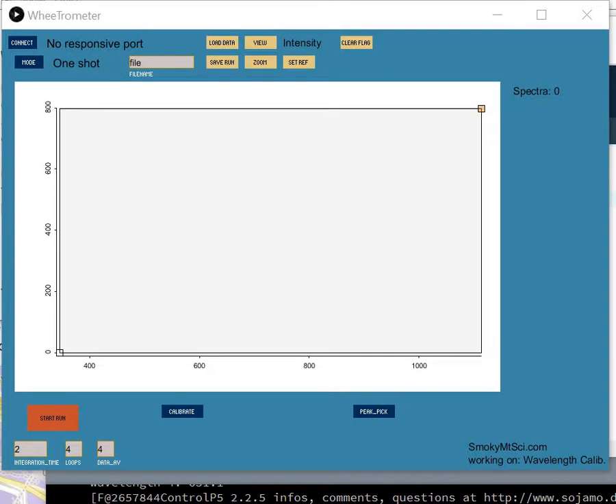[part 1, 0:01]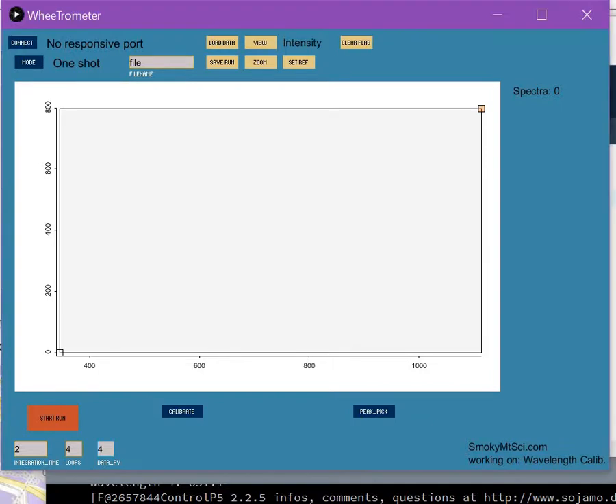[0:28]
In our software for our spectrometer, the WheeTrometer, I specifically want to talk about calibrating the wavelengths for the spectrometer. To do this we need to have a data set, and it needs to be collected with one data point averaging so that we get the full 3600 data points across the baseline.
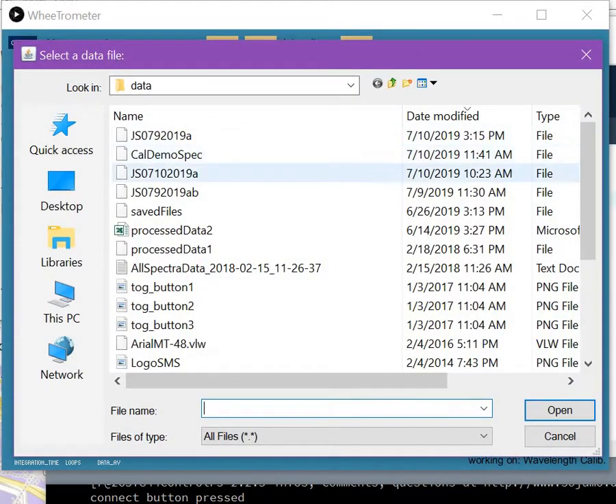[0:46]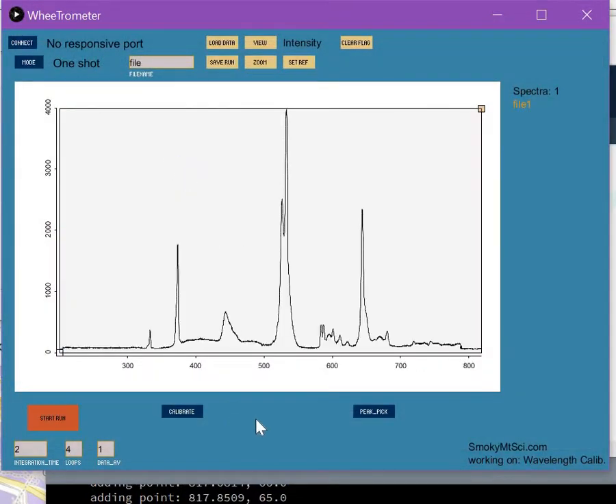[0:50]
We could record that, but I've done this beforehand, so let's load the calibration demo spectrum. So there's the calibration demo spectrum. This is the spectrum that you get when you record a compact fluorescent light emission. We're going to use this because the wavelengths are well known.
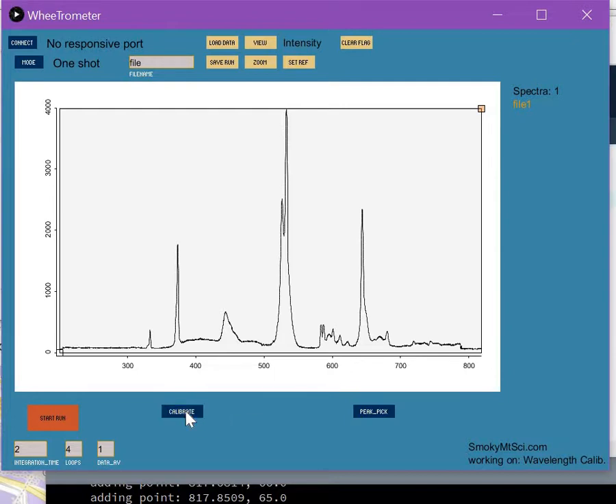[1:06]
We're going to hit the calibrate button down here, and it's going to give us a list of wavelengths and a list of pixels. So the first thing we have to do is make sure that we have all of our pixels. And these are the wavelengths for compact fluorescent light. If you want to use a different wavelength set, then you'll have to enter that information into a calibration file, and I'll talk about that at a different date.
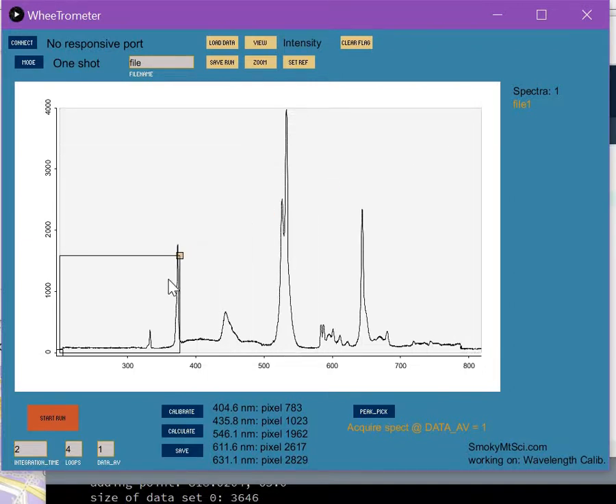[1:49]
All right, so what we have to do is make sure that the pixel number that goes with a peak is the correct pixel number. So we're going to zoom in on a peak, and let's take this medium-sized one there. Okay, this is the second peak. There's the first one there. Here's the second one. Second peak should be at 435.8, pixel number 1023.
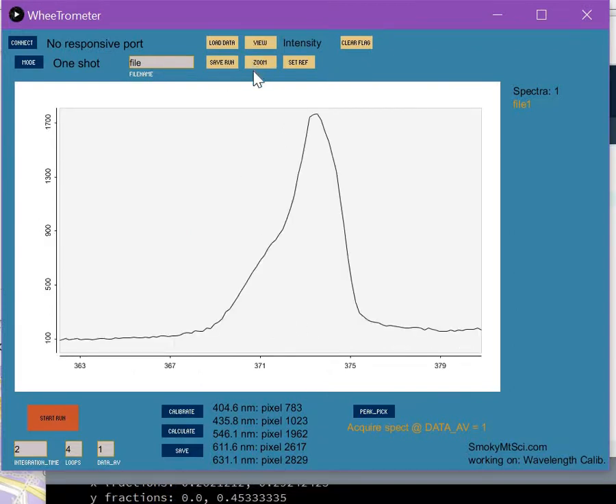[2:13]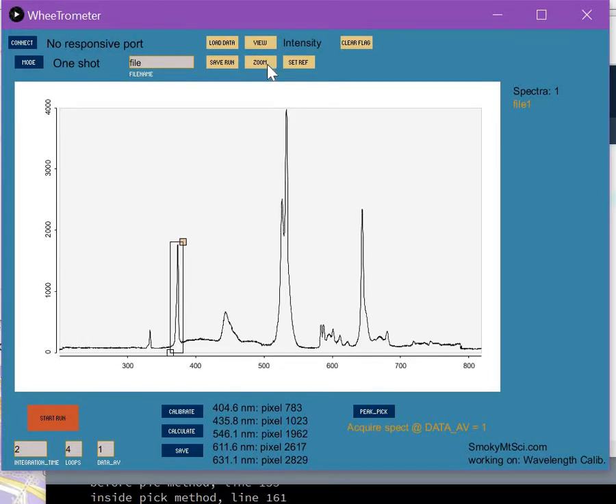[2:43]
Okay, so we're going to zoom in on that peak, and we're going to select that peak, and we're going to tell the program to find the pixel number. So you hit the pick button, and it picks the pixel number, the highest point in the zoomed region. All right, so I have done this previously for each of these peaks in this particular spectrum, so all of the peaks should be correct.
Okay, once we have all our pixels picked, I guess I should go through and show you which peaks go with which listing here. The first peak is this one. It's at 404.6. Second peak, as we said, 435.8. The third peak, we're going to skip this broad one. We're going to skip that one. We're going to take the highest peak in the spectrum. That should be at 546.1 nanometers. The next peak on the list is 611.6. That's this one. The final peak is down here, which is at 631.1 nanometers.
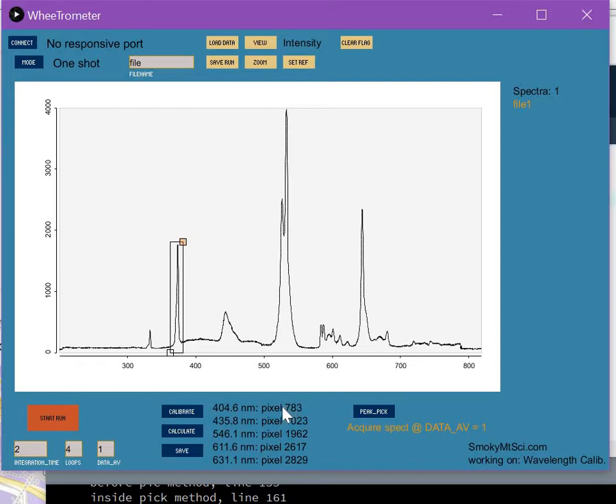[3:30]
All right, so we're going to select all of the peaks that we want to use in a least squares refinement. The model used here is a linear model with a sine function correction. All right, so we have all of our peaks selected. We're going to hit the calculate button, and what's going to happen is it's going to shift the baseline. The spectrum will stay the same, but the baseline will adjust so that the spectral maxima will align with the wavelengths that they're supposed to be at. So let's do that, hitting the calculate button.
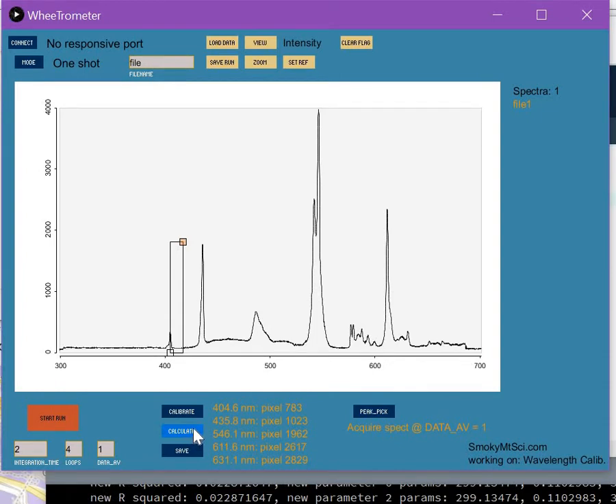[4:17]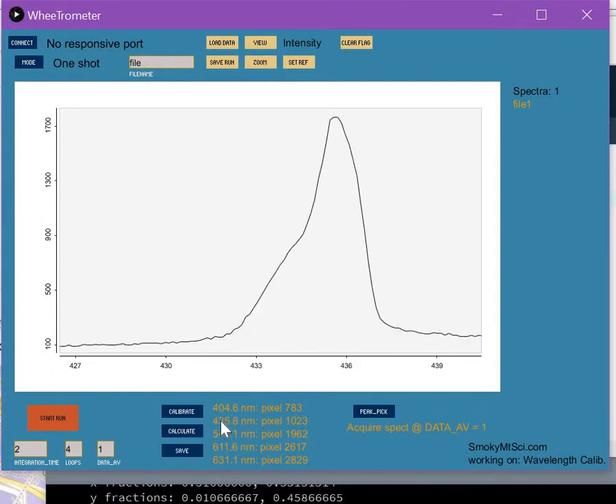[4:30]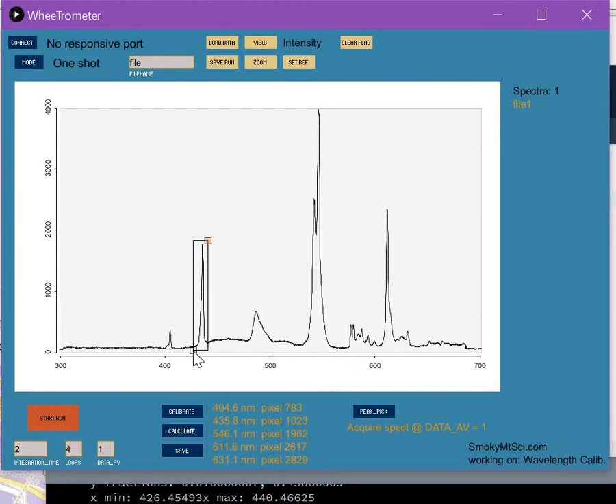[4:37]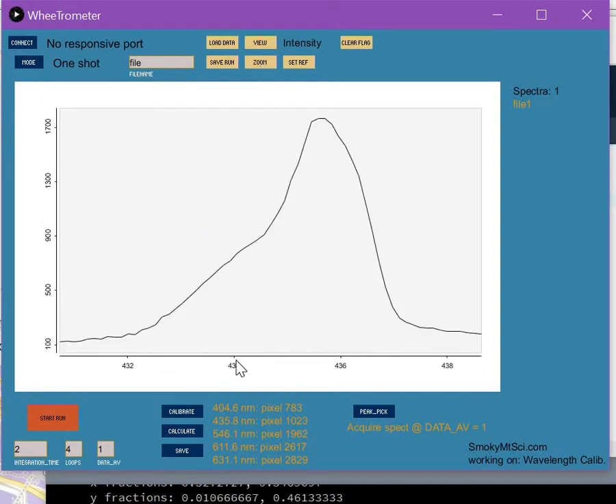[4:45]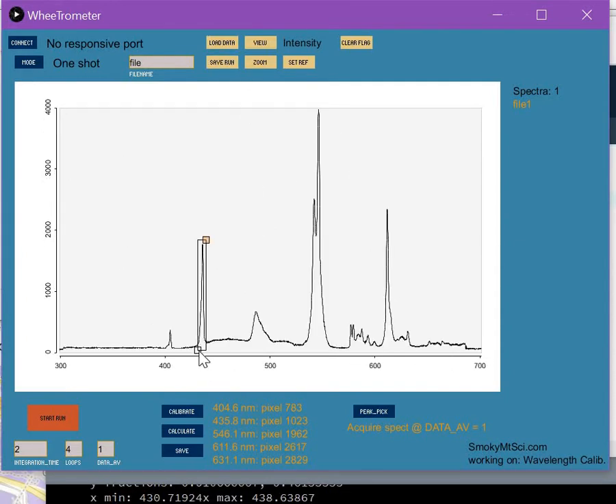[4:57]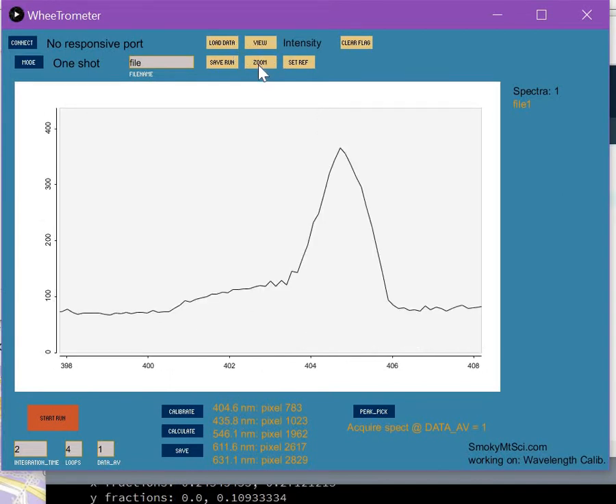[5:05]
Okay, we could look at any of the peaks that we wish to. We could look at the little guy down here, and it should show up at 404.6, and there's 405. That looks pretty good. Anyway, that is how we calibrate our wavelength data for the WheeTrometer.
And pretty soon here I'll have the save button working, so you'll be able to save the wavelength calibration file that you just created. I haven't quite gotten to that in writing code at this point, but that's going to be pretty soon here.
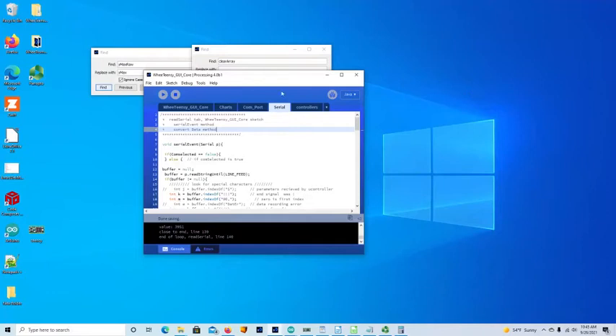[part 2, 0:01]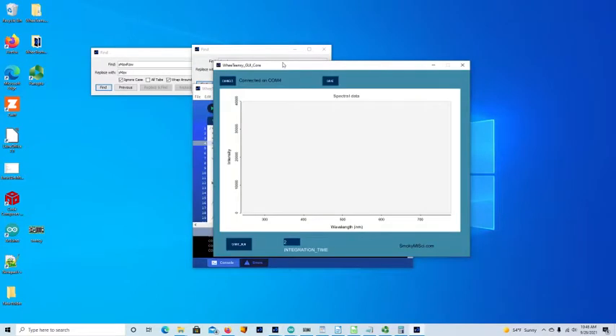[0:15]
Alright, so now we're going to do a little demo of the Teensy Core user interface. This is going to be a really minimal interface, so it's not going to have a lot of functionality. Anyway, when you open it up, it will try to connect to your spectrometer, and if it does, it'll say connected on, and it'll tell you the COM port number. All right, so we're all connected there.
Let's see what happens when we hit the start run button. And if things work right, like they should, you then get the spectrum, and this is the spectrum of a compact fluorescent lamp. Okay, you'll notice there's an integration time listed down here that says 2, and that is in milliseconds. And you can see that at 2 milliseconds, we're getting between 30 and 40,000 counts of intensity on the y-axis.
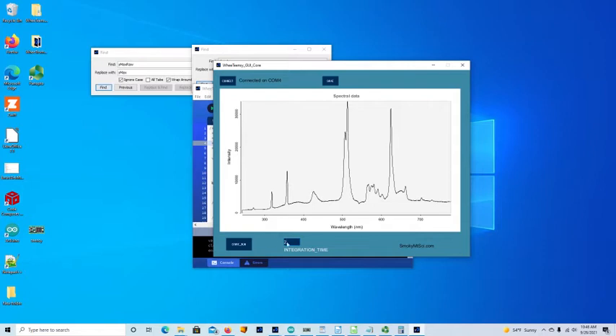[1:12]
Okay, let's see what happens when we turn this down. So let's say 1. You just click on that box there, you backspace and type in the 1, and then you come over and you start to run again. Okay, so we used to see 30,000. Now we're down to 13,000 at this point. Okay, so that means we have less intensity. Now you can't go up infinitely.
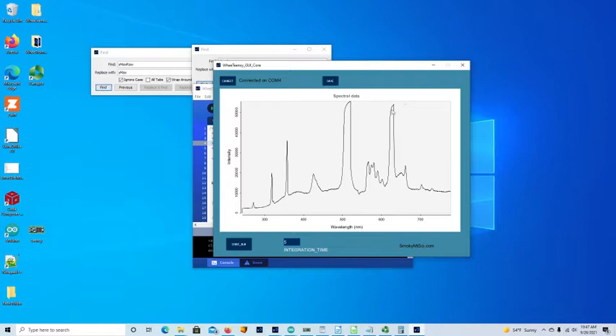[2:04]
Let's see what happens when we tell it we want 5 milliseconds of integration time. When we do that, we get a bigger number here, but you can see that we are maxing out our detector, which is a charge coupled device, right? So when you see flattened out peaks like this one and this one over here, that means you're not getting data. That data that you're recording is not particularly real, and that has implications for the width of the lines and other things as well. So it's best to get your really sharp data points or sharp lines and have a lower intensity number.
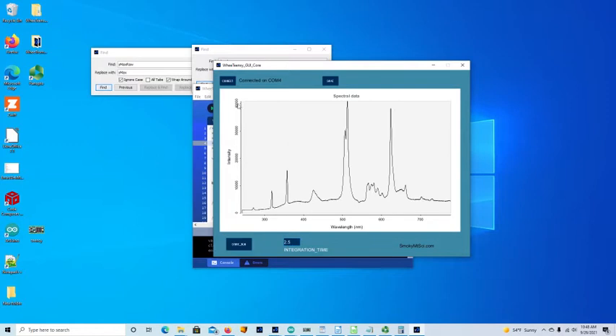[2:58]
So let's back that down, and I believe 2.5 is what we're looking for. I should also say that the maximum number that your A to D converter will give you is about 65,000. So at 50,000, yeah, we're probably maxing out the intensity. We're saturating our detector. All right, so at 2.5 milliseconds integration time, we have a little over 40,000 counts, and that looks pretty good.
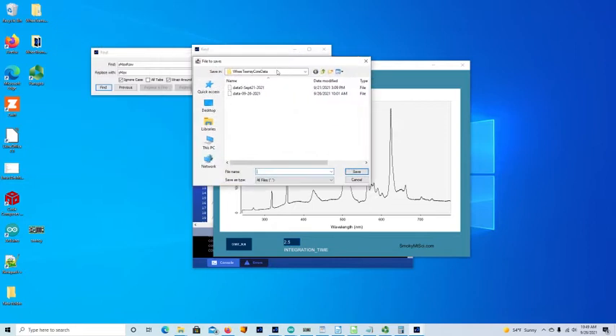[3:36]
All right, so we showed you the connect button. If we connect, nothing really appears to be happening, but it's actually checking to make sure you're still connected on that COM port. We've shown you the start button. We have demonstrated changing the integration time, and the only other button up here says save, and that allows you to save the data as a comma separated value file.
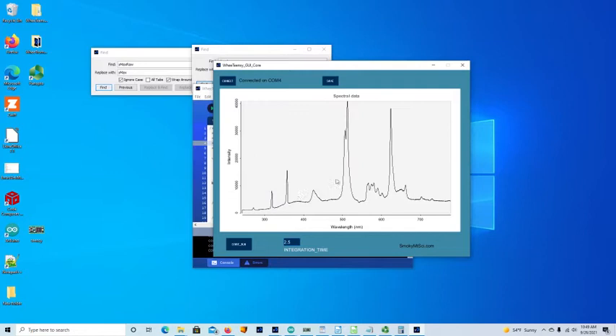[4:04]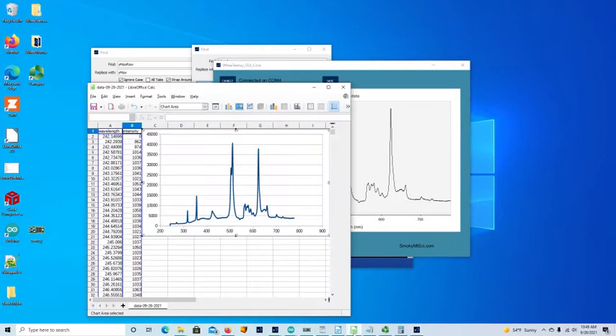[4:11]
All right, so you click on that button and it opens up a box, or a screen, or whatever you want to call this, that allows you to give it a name. Let's call this data 1, and we'll just hit the save, and let's make sure we know where we're at. So we are in Teensy Core data, and I believe that's on my desktop. Hit save.
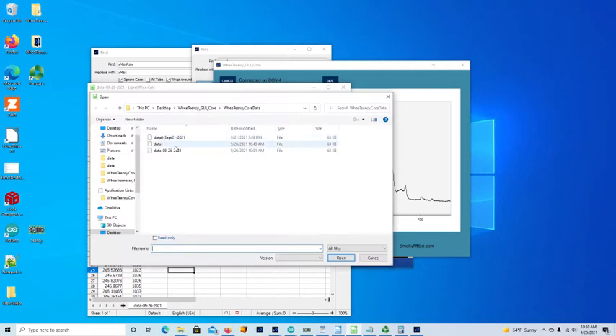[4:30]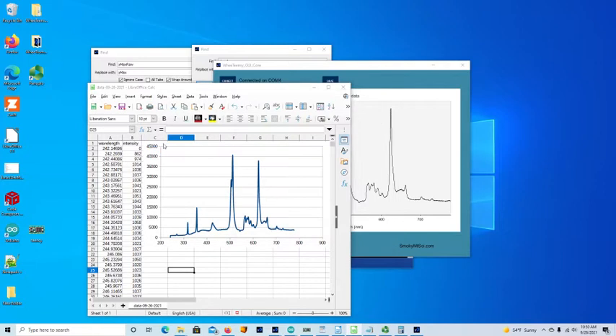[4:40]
All right, now we can open that using any kind of spreadsheet program that will open a CSV file. And I'm using LibreOffice, so let's go in here, and where is open? Open remote. Let's just see what happened. Okay, now we can open. All right, so here it is, desktop, Teensy GUI Core, Teensy GUI, Teensy Core data, and data 1 is where we were.
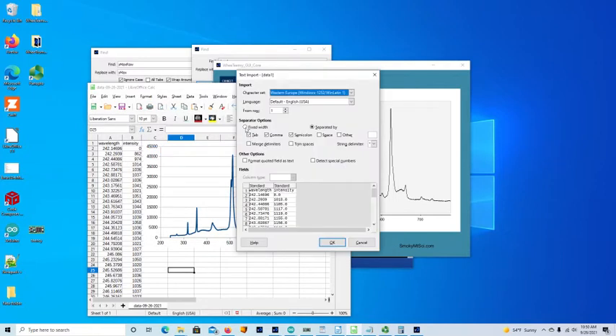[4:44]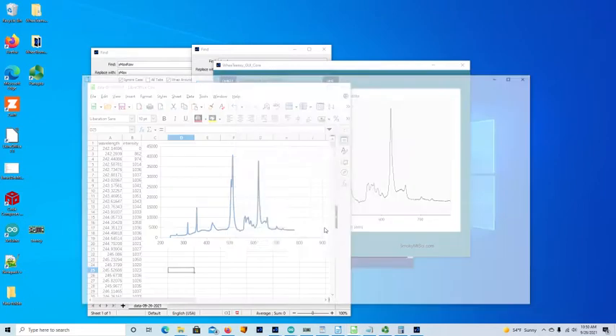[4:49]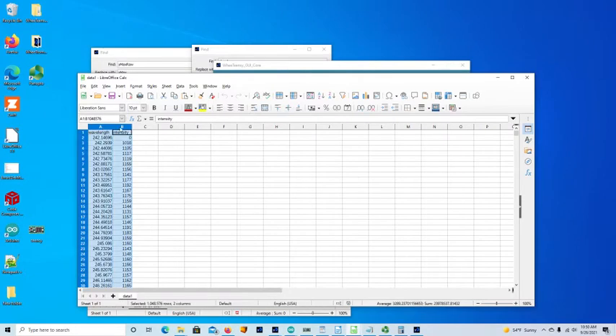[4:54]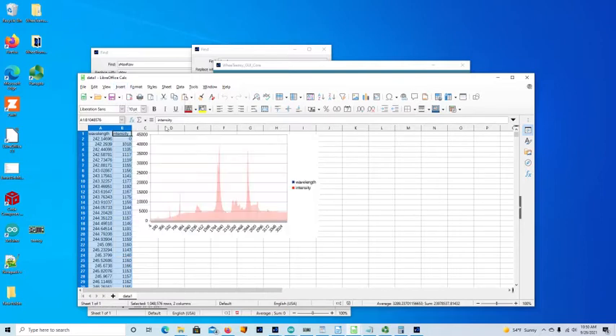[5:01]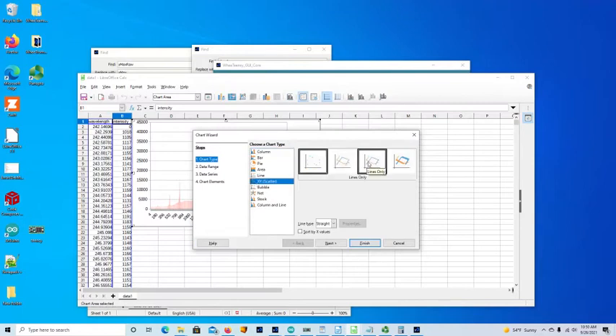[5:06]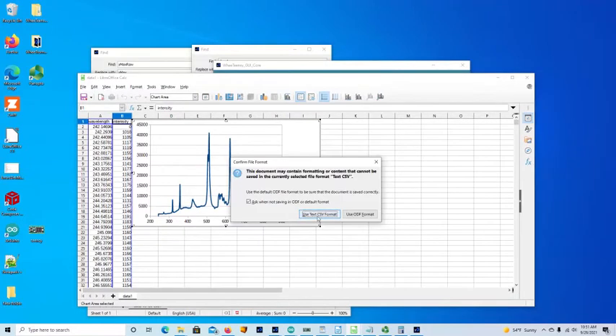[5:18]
Okay, we are opening with comma separated values, and now we can select our 2 columns and say insert chart, and hopefully we will be allowed to pick out the XY scatter and only the lines finished, and that's what the data look like. All right, so that is the view of the data.
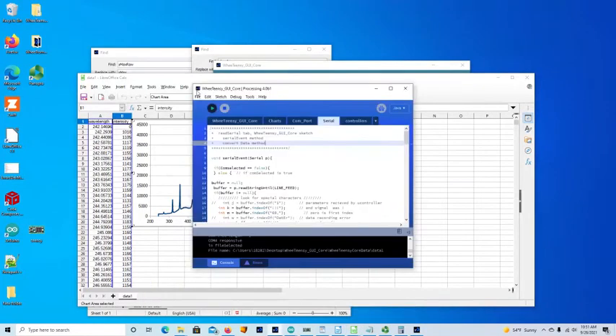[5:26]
Anyway, let's take a look at the code. All right, Teensy GUI code. The code has five tabs. The main tab is the Teensy GUI core tab, and all these programs have to be in the same folder. The folder is called Teensy GUI core, and this program was written in Processing. It's for Processing 4.0 B1.
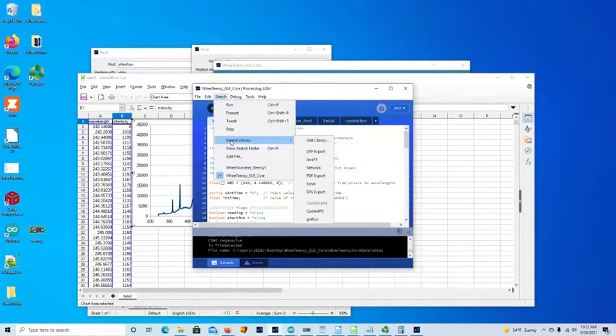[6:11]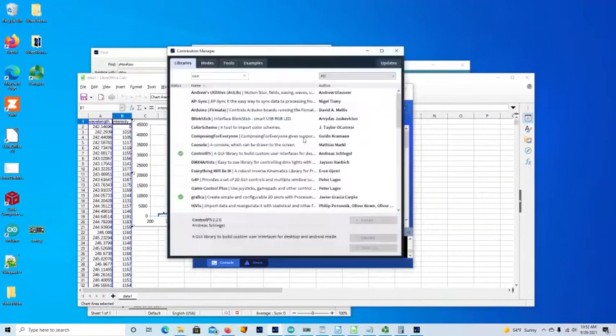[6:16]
And what do we want to tell you about that? Well, to start with, we have to have some imported files, and to import a file, you go into Sketch and Import Library, and if you don't have these libraries already, you go to Add Library, and you need the ControlP5 and the grafica library.
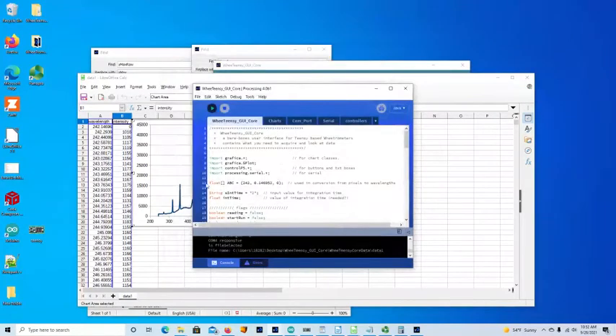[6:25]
Okay, so let's close that, and another thing you'll need to know is that this float ABC has three values, and these three values are used to convert pixel number to wavelength, right? So if you make your own spectrometer, you're going to have to come up with those ABC values, and I'll show you how to do that in another video.
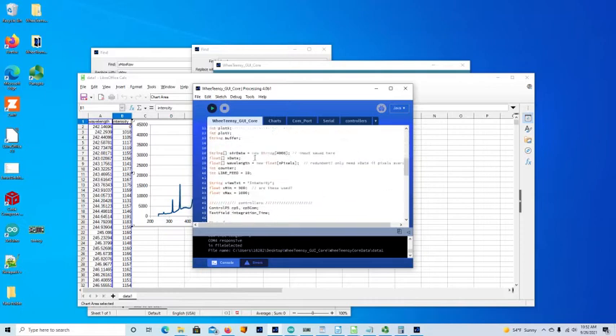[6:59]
Okay, so we have Teensy core. This has a lot of our variables declared. There's a setup that has the size of the user interface and the size of the plot and some other stuff in there. Then we have our draw method, and you'll see there's very little in either of these setup or draw methods. Instead, what you'll see is something like a setup charts method, and setup charts is going to be on the charts tab, right? There's a controller setup, and that'll be under the controllers tab. There's a setup COM port, and that's going to be in the COM port tab. Connect is in the COM port tab too.
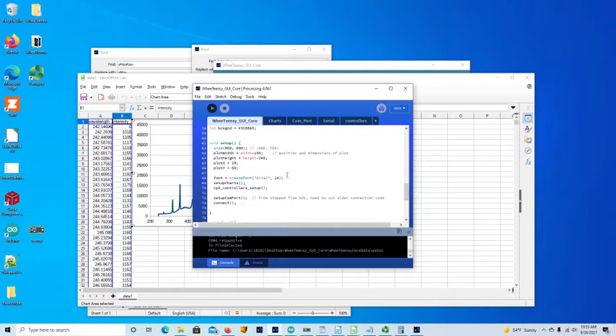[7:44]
All right. So if you don't know where one of these things is, I try to put a little comment at the top that says that this has the setup COM port method and the connect method, right? Charts has a number of methods: setup charts, wavelength calculation, set axis, plot charts, and etc. Right? So there's a lot of stuff in like the serial tab, and I probably should clean it up a little bit before I put it on GitHub. There's a bunch of stuff in the controllers tab.
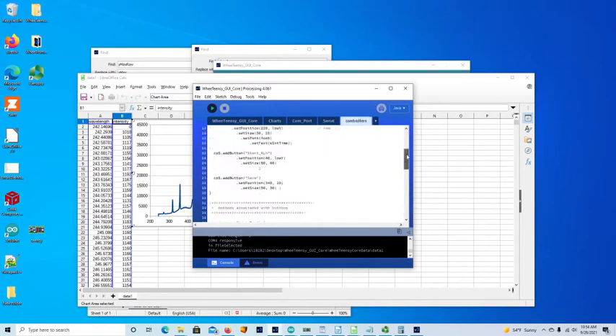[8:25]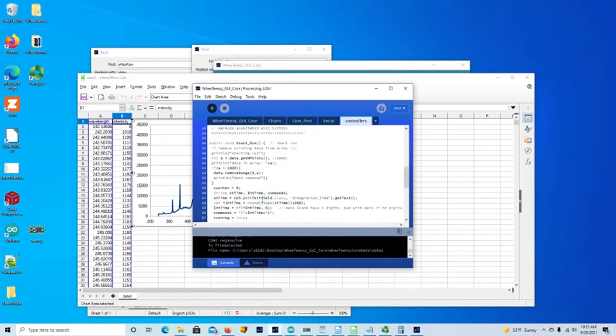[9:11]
All right, so let's go to the top there. It has the setup controllers method, and it sets up the buttons and the text box. There are methods that run when you click on a button. Those methods are down at the bottom, right? So if you click on the save button, it runs the save method, which just says select output, and this file to save. That's a method that is in Processing, and then this file selected method was defined down there. Okay. All right, the start run is up here, and like that.
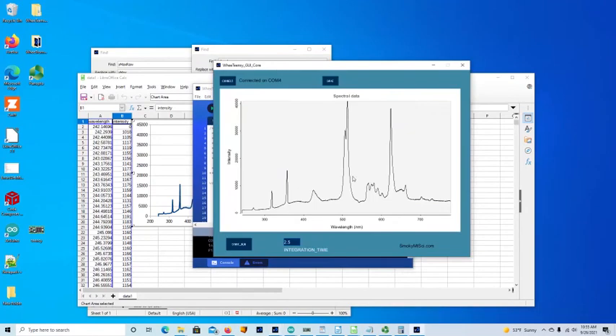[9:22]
Okay, so like I said, this is a fairly minimal user interface. All it does is give you the raw data back out, and it only allows one single spectrum to be collected. But we will have other user interface videos and other user interface code available, and we will have demos for that as well.
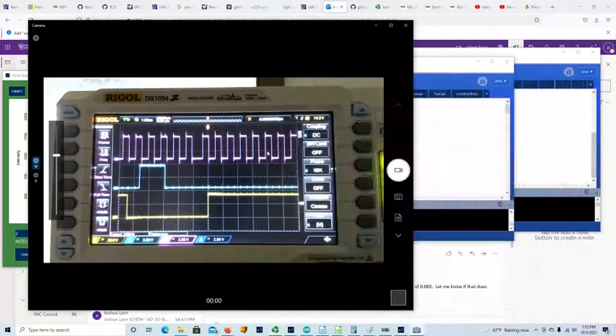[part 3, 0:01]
All right, this is a video showing the scope traces for the inputs to a TCD1304 charge coupled device, right? And what you see here, the yellow is the integration clear gate, and that's what we are triggering off of. The blue is the SH that determines the integration time. And the pink here, that's the clock, right?
So the first thing you should notice is that nothing is moving here. Nothing's moving side to side. There's little variations in the little blip heights here. That means that this is not a single shot, it's a continuous scope trace. All right, so let's see.
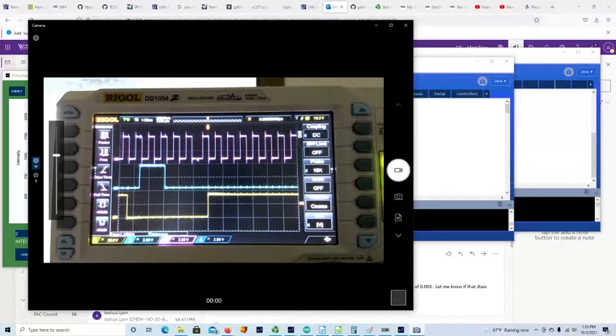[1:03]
The clock is running a little bit faster than 1 megahertz. As you can see, the divisions are at 1 microsecond. So if we start here, then 1 microsecond is there, and you can see we're inside of that. Okay. The other thing you need to have is this has to be high when the ICG pin goes high. Right? The ICG pin going high is what starts an acquisition.
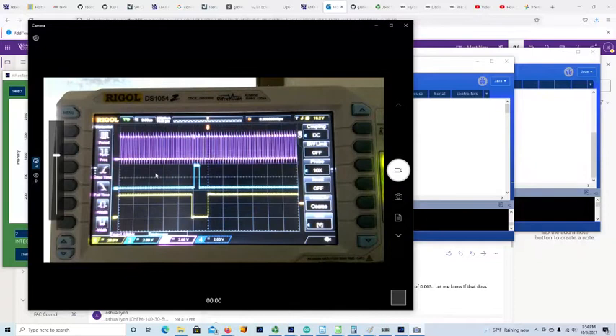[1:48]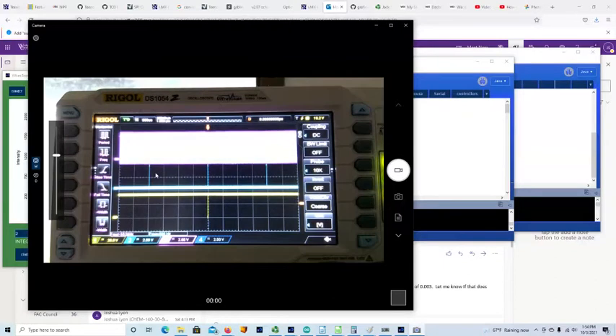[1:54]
All right, let's change the time scale and show you what happens with the ICG and the SH pins, right? SH pins, like I said, is the integration time. As you see, we're going to longer and longer times, and we've just completely lost the view of the clock. And here we have the ICG, the integration period, okay? And I believe that says 0.5 milliseconds, so 500 microseconds. So this is a half, 1, 1.5, 2. Okay, that's 2 milliseconds for the integration time.
You'll notice that the ICG period is not showing up here. We don't have a second ICG period. That should show up at about 14 milliseconds. So let's keep clicking this and see if we can get a look at it. All right, let's click it back once, and we'll move it on over some. I'm doing this wrong. I got my finger on the wrong thing. So now we should see the new ICG period come in, or pulse.
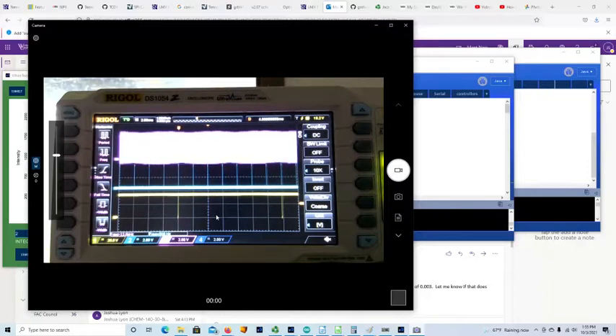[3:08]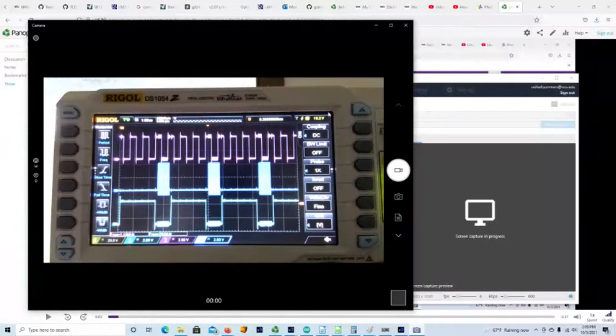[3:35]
All right, and what we see, we have 2 milliseconds between divisions. So it's 2, 4, 6, 8, 10, 12, just under 14 milliseconds, and that's how long it takes with this clock setting to acquire a full set of data on the TCD1304.
All right, so this video shows the timing of the ADC acquisition on the WheeTrometer. And what we have in the pink at the top here are the clock pulses for the charge coupled device, right? And these pulses come every little less than 1 microsecond. And every 4 pulses, we need to have an observation. We need to collect data on the ADC. And that's what's being shown in the lower traces.
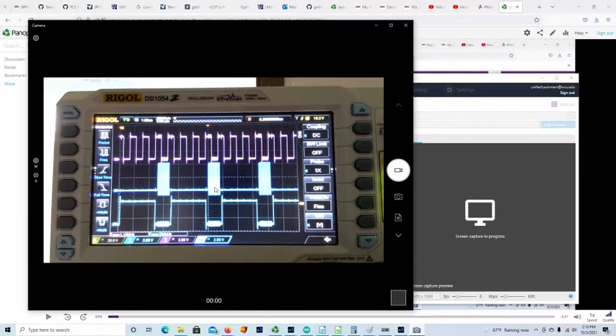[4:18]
This ADC is a 16-bit ADC, and it communicates with SPI. So what we need to do is take our chip select pin low. That's what's going on in the bottom trace, and we have to give it 16 clock pulses. So we have to have the reads be 4 CCD clocks apart, and you can see we're collecting here. That's 1, 2, 3, 4, and then again, we're collecting, and then 1, 2, 3, 4 over on that side, right? So all these lower events are happening 4 clock pulses apart on the CCD clocks.
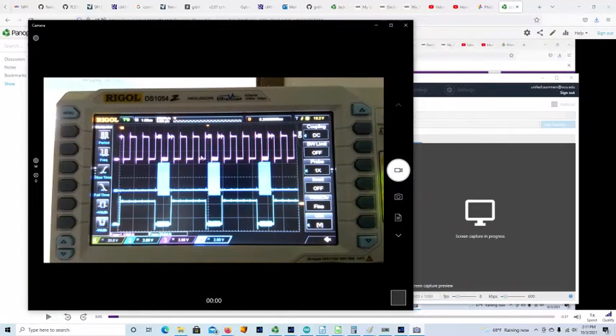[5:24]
And when we zoom in a little bit, we can get a good look at that. If you want to figure out what your timing is here, I should have figured that out, but I forgot to. Anyway, this is the time when the ADC is sampling, and during this period it's outputting 1, 2, 3, 4, up to 16 bits, right?
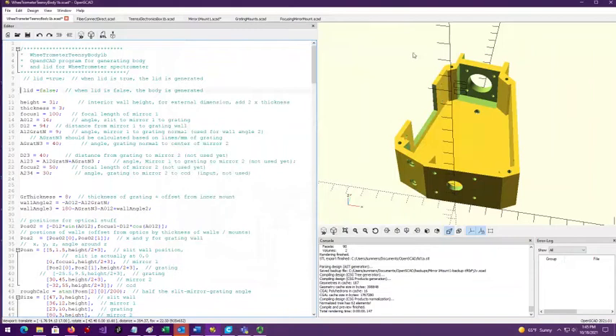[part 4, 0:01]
Today we're going to talk about the OpenSCAD program for generating 3D printable spectrometers. Okay, so over here we have a rendering, well, a view of the body of the spectrometer, right?
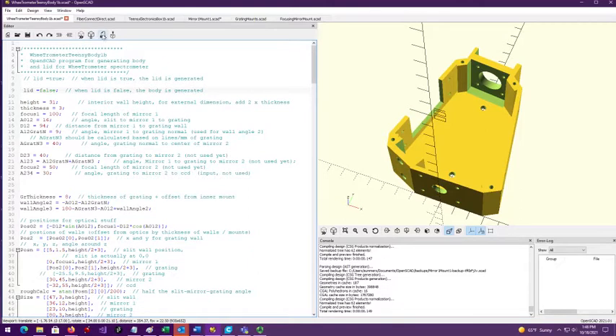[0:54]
So you go in and download the SCAD program for WheeTrometerTeensyBody1b.scad, and this is what you see, right? This button here regenerates the rendering. This button over here makes it a little more polished. This button downloads the STL file, and that one apparently is supposed to do some 3D printing, but we don't have it set up for that. All right, so in the WheeTrometerTeensyBody1b.scad folder, you'll see this, and this generates the figure.
All right, there's a bunch of information in here. This generates the figure based on geometry, and I'm working to get it to where you just enter the distances and angles and it generates the 3D model for you, but we're not quite there yet. Okay, so what we've got.
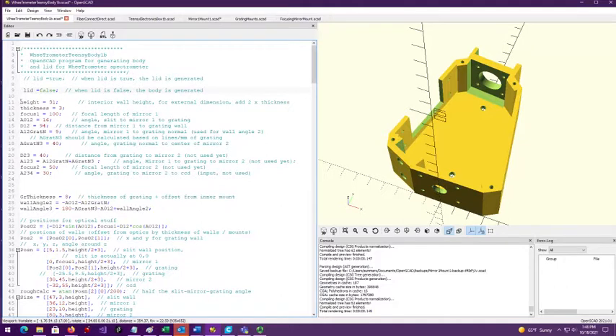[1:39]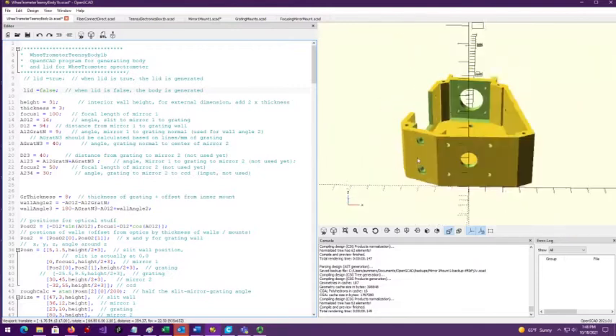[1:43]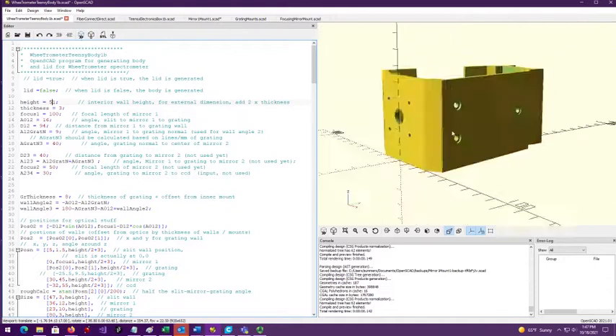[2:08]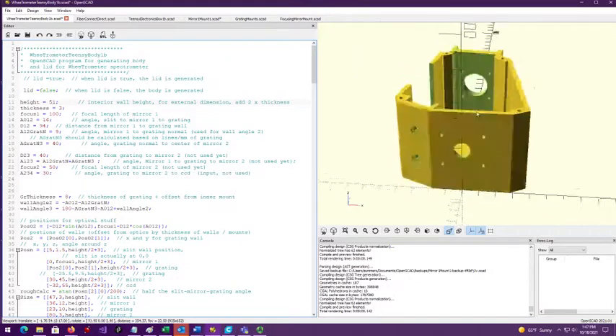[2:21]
So one thing you can do is change the height of the walls. We're set up here for 20 millimeter reflecting mirrors, and so I have an interior height of 31 millimeters. Okay, if you have a 50 millimeter lens or something and you want to put that in, you can change that number from 31 to 51, and then when you hit the redraw button, you'll see that the height of the spectrometer body has changed. All the other dimensions, like the screw pattern that holds in the slit, are all the same. So you can use all the same optical pieces with a different wall height.
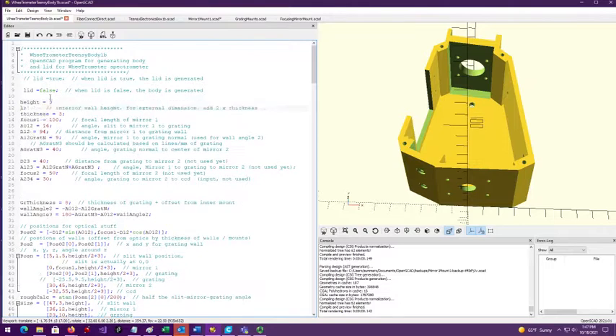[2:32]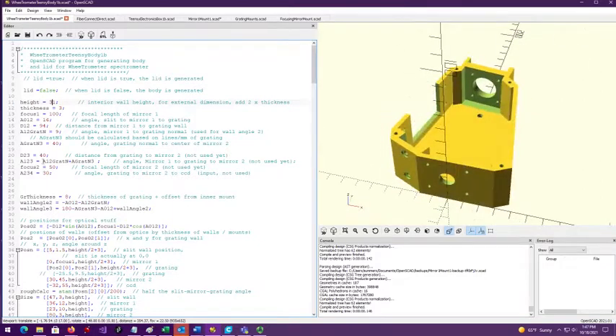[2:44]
So let's turn that one back to 31, and then we'll go in and regenerate that. So now we're back to where we were. There's going to be a lot of different things that you can change from this program.
You'll see a lot of things like focus 1 over here. That's the focal length of the mirror over here, and it's the length from the center of the mirror to the center of the slit. Okay, if you're going to use the equipment that we can sell, then you'll want to leave that one unchanged, right? There's also an angle that you probably don't want to change, this A012, and that is a reasonably decent number.
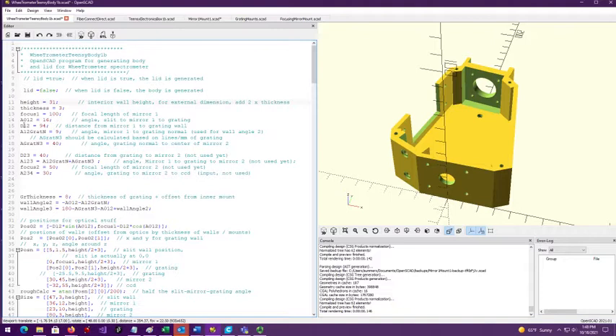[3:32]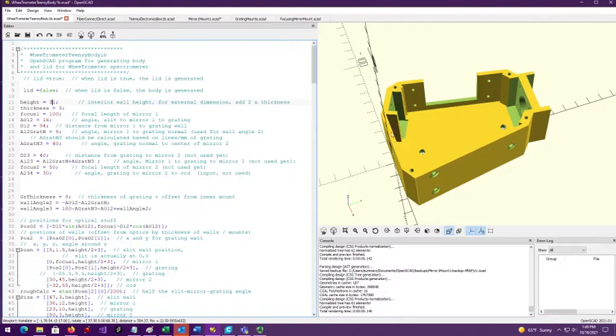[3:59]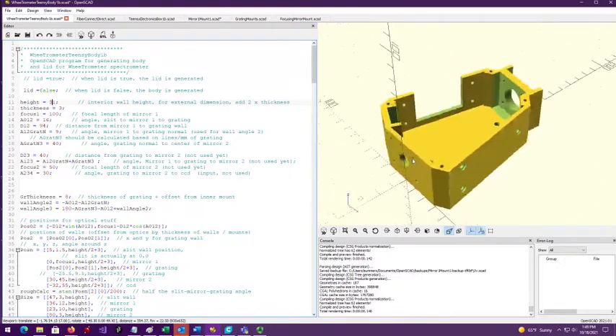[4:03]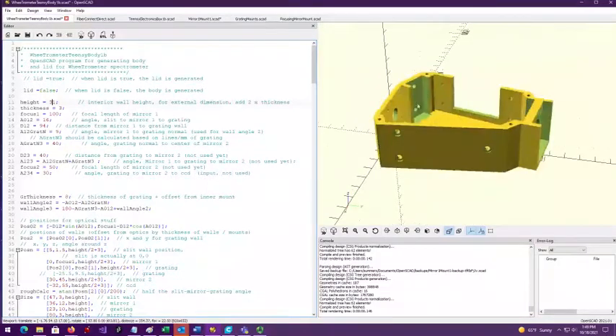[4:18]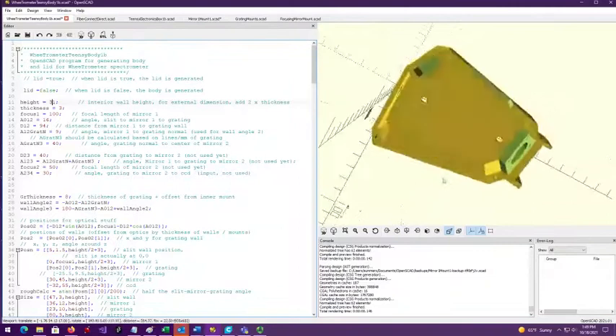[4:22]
In terms of the nomenclature, all these upper things should be A for angle. Angle 012 means the angle between optical element 0, which is the slit, optical element 1, which is the mirror over here, and optical element 2, which is the grating. All right, so I guess I should tell you about the numbering. The optical elements are all named based on the order in which the light comes through them or hits them. Optical element 0 is the slit. Optical element 1 is the mirror over here. Optical element 2 is the grating. After it hits that, it comes over to optical element 3, which is the focusing mirror, and then optical element 4 is the CCD.
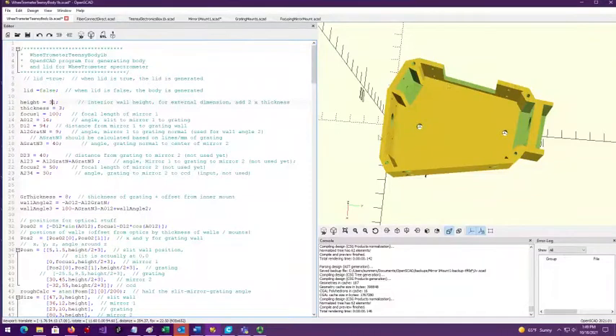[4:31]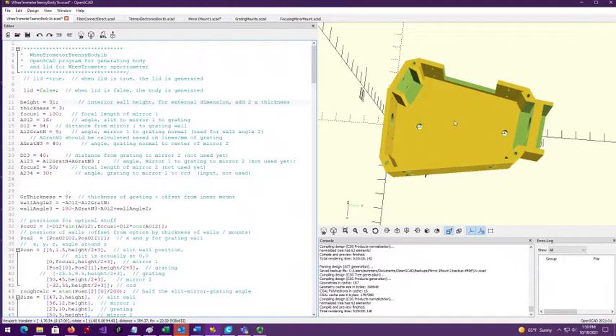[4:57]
Okay? All right, so when we number things over here in the code, you'll see things like A012. That's the angle between optical element 0, which is here, optical element 1, which is over here, and optical element 2, which is there. So 0, 1, 2. If you find another one, it'll say A12 grat n, and grat n is the normal coming off of the grating. So the angle from 1 to 2 there, and the normal off of that grating, right? All right, so I guess I should change that number, but I didn't. Anyway, if you want to change these values, then hopefully we'll be able to do that.
And you can see over here, if we wanted to change the angle to the grating normal from 9, let's say we want to change that to 12. And keep an eye on what happens to the angle here and the angle over here. When we hit the button now to re-render it, we have slight changes in the angle there, right? So that is a benefit, I see, of this program. You can make changes to the geometry based on what you see and what you want to do. And it's not a huge pain in the butt.
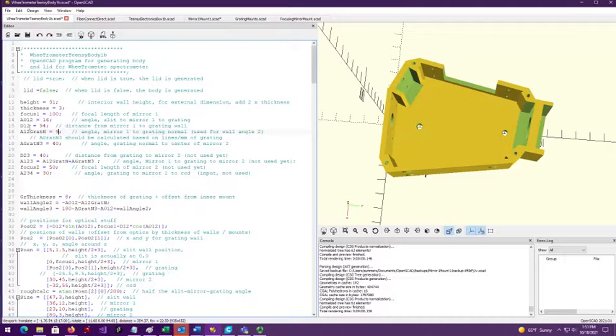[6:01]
All right, so there are a lot of things in here that say not yet used, like D23. That should be the distance between 0, 1, 2 here and 3 over here. And what we're working toward is making this model changeable, well, not infinitely changeable, but changeable from the first few lines of code.
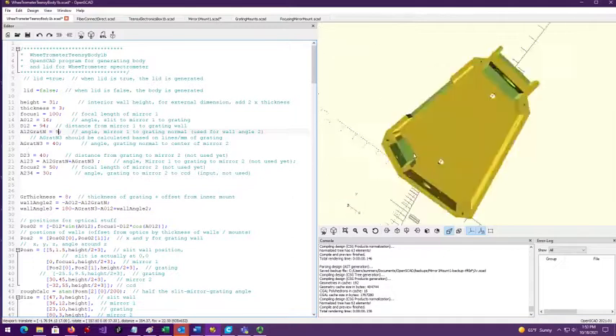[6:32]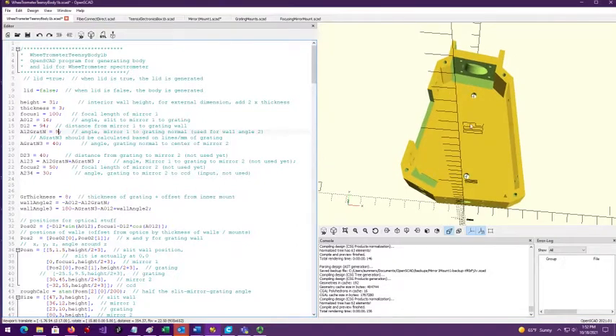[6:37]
One thing that we can do is make a new lid for this, right? That's one thing that will be important if you change the numbers over here. You're going to have to change the geometry of the lid as well. What's going to happen is you change a number, and this wall will change in its angle, and the lid will have to change. So instead of having a separate program to generate the lid, we have a variable called lid. It's a Boolean, and up here you can see it says lid equals true. That's been commented out, and here it says lid equals false.
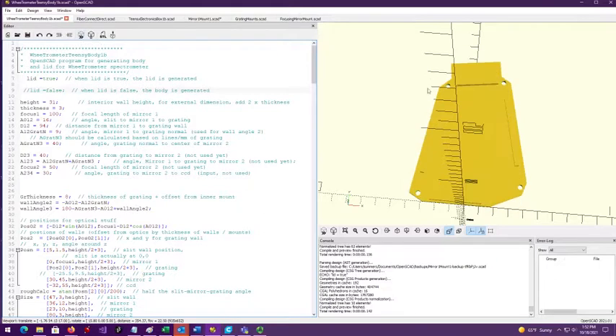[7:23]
If we uncomment lid is true and comment out lid is false, then we'll generate the lid when we hit this button. Boom. Okay, so there's the lid. It's been flipped over. It should fit on the body of the spectrometer as you've generated the design.
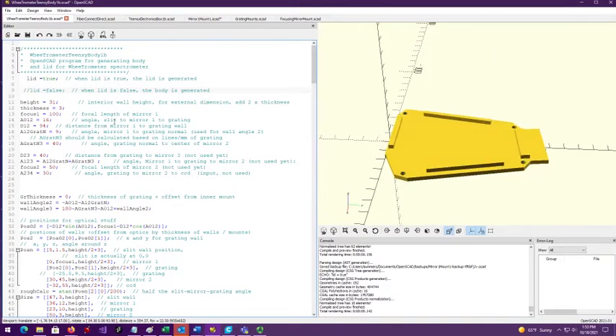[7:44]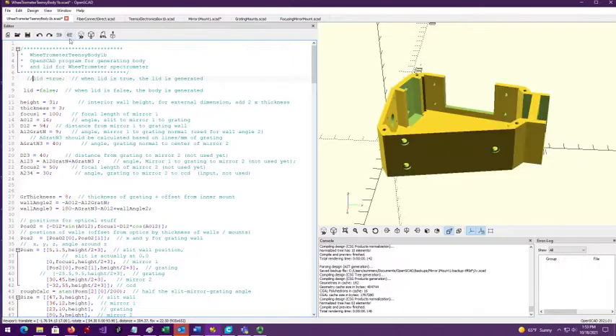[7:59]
There's something a little funny going on over there I need to check into. I'm not sure what's going on. Anyway, this is a work in progress. I've just gotten to the point where I want to put something online describing what we've done. All right, so let's go back to lid being false, and there's that. All right, let's look at other things that we've got in the OpenSCAD.
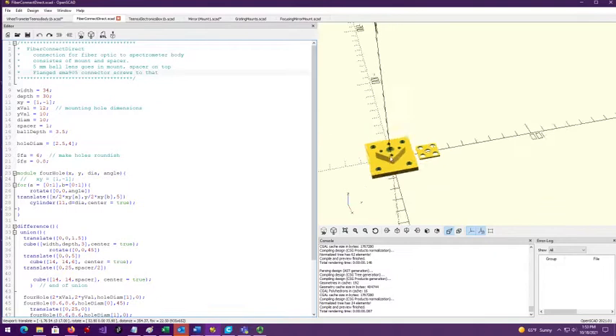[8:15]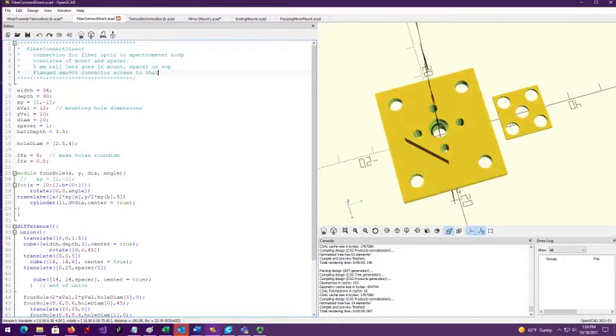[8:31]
Okay, so here this tab says Fiber Connect Direct. All right, let's take a look at that. So what that is, this is a flange that fits over the slit hole, and it provides a mounting for an SMA 905 fiber optic connector. Okay, so the fiber optic connector will require a lens. That lens drops down into this hole.
It needs a spacer. This is the spacer over here. This goes right on top of this. Screws in using number 4 sheet metal screws. These holes here are used to mount the piece onto the spectrometer, and then there's a metal fitting that you can purchase, and we've purchased a bunch of them, and we'll hopefully have them available for retail. All right, so that is how you connect the spectrometer to a fiber optic instrument. Let's see what we have next here.
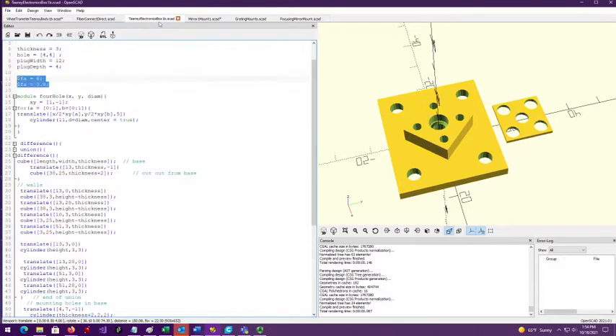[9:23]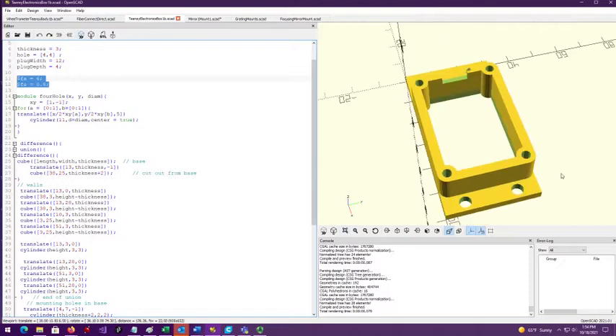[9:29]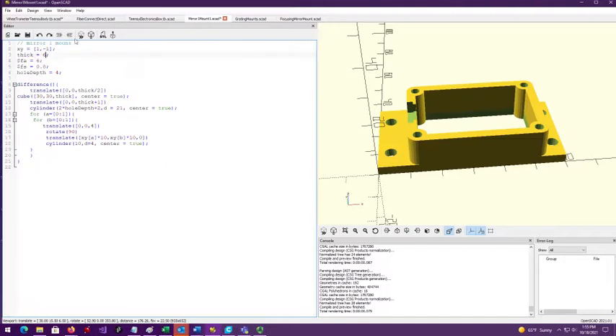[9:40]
Let's see, we have this. It says Teensy Electronics Box, and this is the electronics box that fits the spectrometer to put a Teensy-based electronics on this. Over here we have the mirror mount. Okay, this is mirror mount number 1. There are 2 mirrors, so you have to have 2 different mounts. This is for the collimating mirror, and it's a 20 millimeter diameter, 100 millimeter focal length spherical mirror.
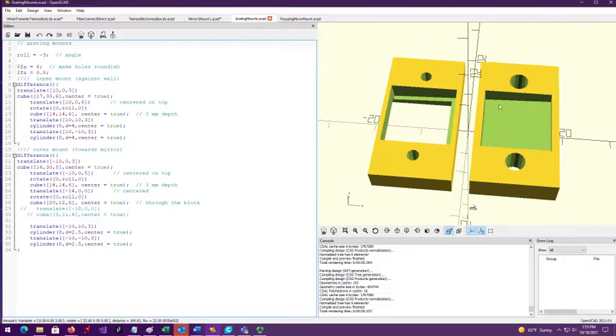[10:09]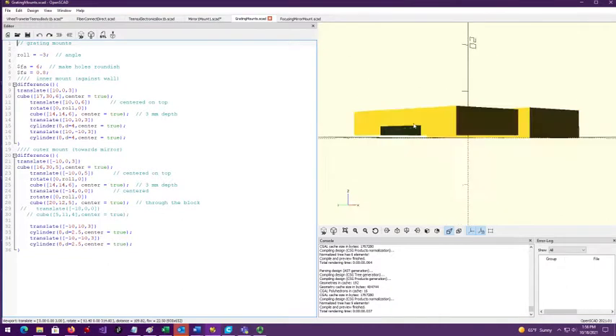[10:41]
All right, let's see. Grating mounts. You have to have a grating, and this is the inner grating, and here is the outer grating mount, right? The inner grating mount and the outer grating mount. These are for 13 millimeter square ruled diffraction gratings that you can buy from any optic store. And the plan here is you drop the grating down in this one, you drop this one on top, you turn it over. These little areas here will hold it in place, and you screw this whole thing to the spectrometer body.
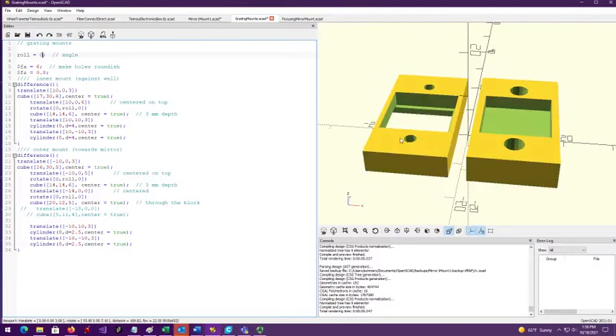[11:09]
All right, so you'll notice that we have an angle here, right? So you can change that angle over on the left in the code. It says roll equals -3, right? So we can set that to 0, and we'll have a flat level grating mount, and you can change that to whatever value you need to have. I think I should have them at 0 just to characterize.
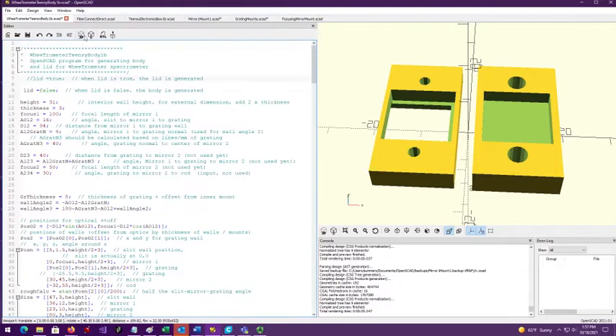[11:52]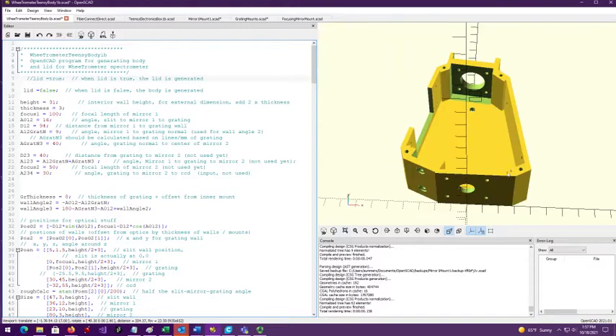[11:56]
Anyway, that is useful when you find that you're not able to access the part of the spectrum that you thought you were going to be able to access, and you don't want to 3D print an entirely new spectrometer body, right? So you can just change the angle that the grating is held at. Okay, and let's show you where that thing is.
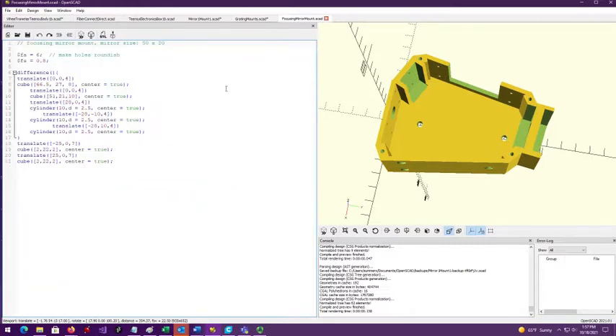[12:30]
So the grating fits into this little green square over here. The inner body mount, it goes up against this wall. The grating goes between the inner and the outer grating mount, and then you screw it in from the back, and that holds everything still. By changing that angle inside there, you change the angle at which the light comes off and strikes the focusing mirror over here. All right, the last piece that I have up here right now is the focusing mirror mount.
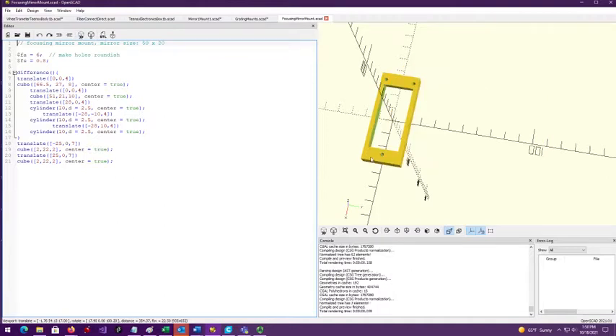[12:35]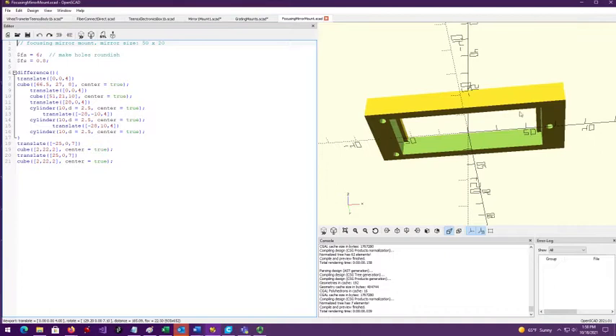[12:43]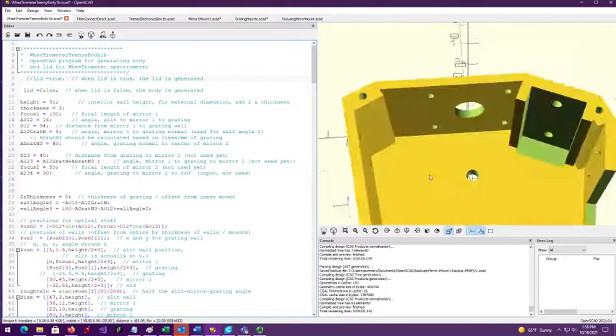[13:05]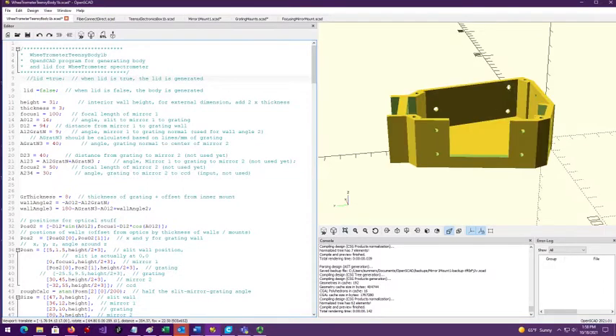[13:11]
Let's see what that looks like. Okay, the focusing mirror is a 20 by 50 rectangular mirror, and it goes up underneath this thing. Those little wings there, they hold the mirror in place. We have 1, 2, 3 mounting holes. Let's go back over to here and see where those attach. Okay, those 3 mounting holes, they attach through these holes here, right?
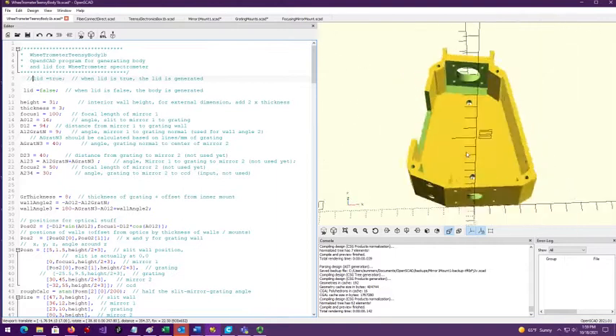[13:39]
And what we do is we put a piece of squishy foam behind the mirror, and you put the mirror mount on the other side of the mirror, and you screw, using sheet metal screws, you draw the mirror with the mirror mount against the squishy foam. All right, so once you have your parts designed the way you want them, then OpenSCAD makes it very easy to generate an Stl file, which is what you'll need to have in order to 3D print.
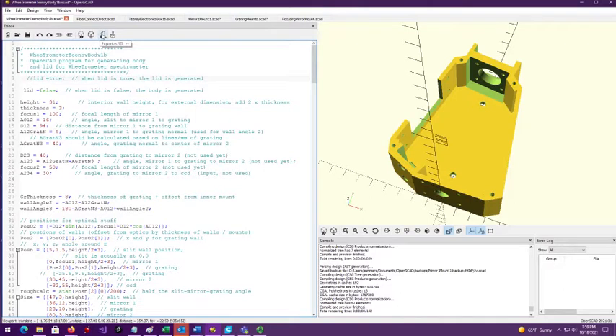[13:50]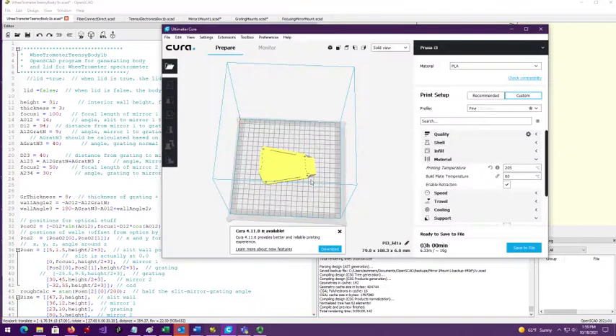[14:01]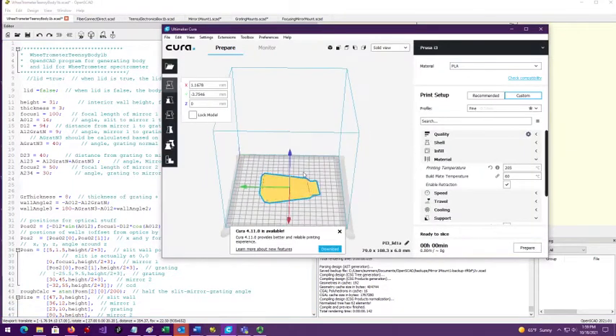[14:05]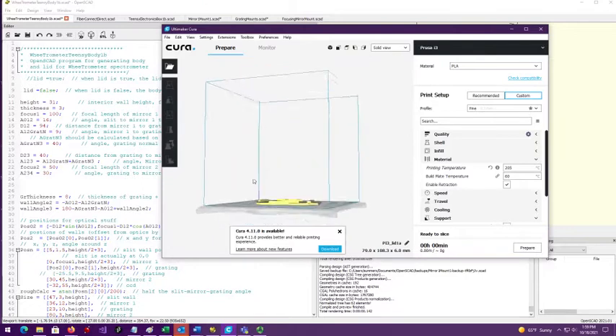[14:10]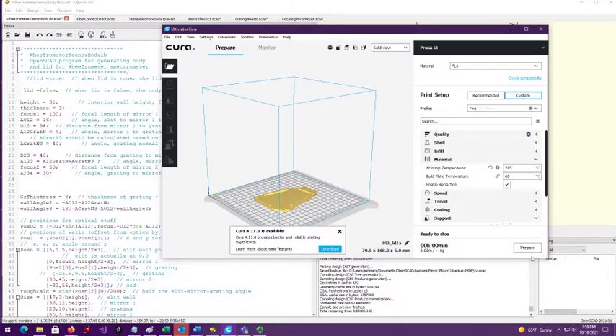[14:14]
You just click that button. It'll give you a way to get in and generate an Stl file. Tell you where to put it. Okay. Once you have your Stl file, you go into Cura or whatever slicing program you want to use, and you generate the G code from the Stl code. After that, then you're kind of on your own as far as printing goes.
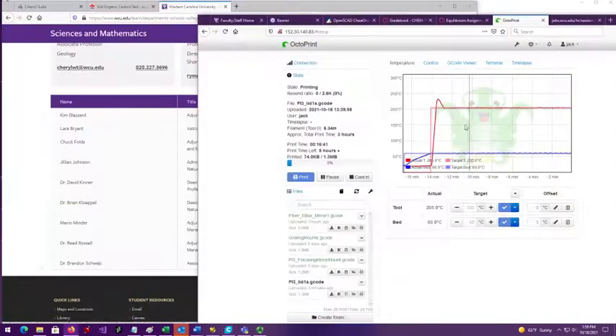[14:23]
And it's at temperature, so now we can look at it, and you can see that I am on the first layer of a lid print here, and that pretty much illustrates everything I wanted to show you. So that's about it. All right, I hope that's been helpful.
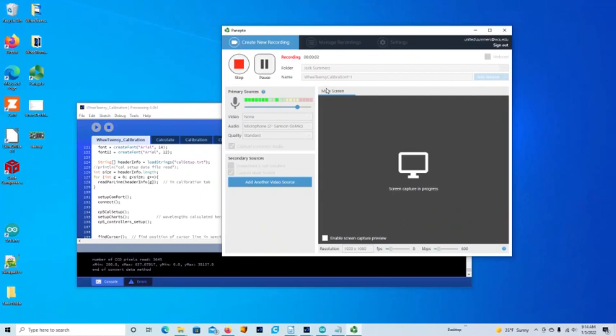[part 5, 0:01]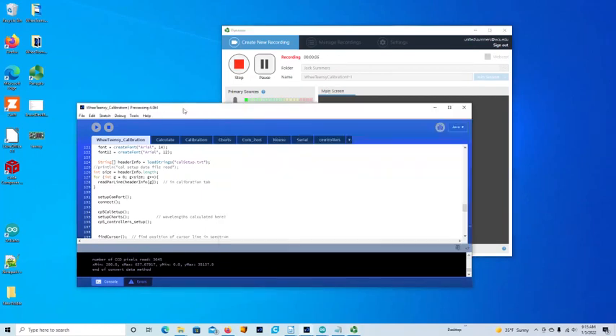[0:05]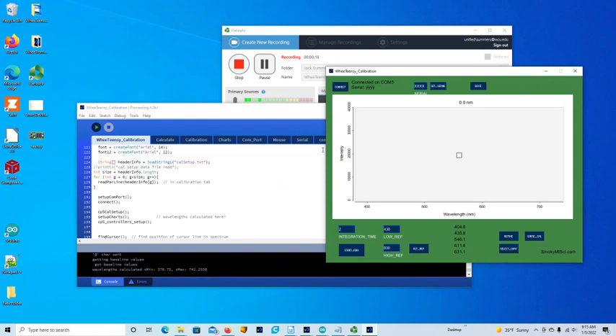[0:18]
Okay, so this is a video to show the calibration of the Teensy spectrometer. We're going to run this out of the Processing user interface, and we've got our spectrometer attached on COM5. When it came up, it said immediately connected on COM5.
If it did not, you hit the connect button and it should connect, and if it doesn't, that probably means your COM port needs to be reset. So that's one thing to look at. Down here it says serial number, and this is what you get if there's no serial number in the EEPROM, right? There's supposed to be a serial number in your non-volatile memory. So let's just set a serial number.
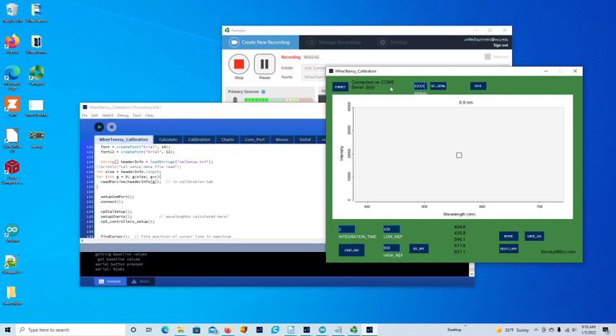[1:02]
All right, so what you do when you have something like this, if we want to set the serial number, we come over to this box, we click in there, and we will backspace until all the X's are gone. We'll type in the serial number that we want to have, and let's say we want to call this JS star 1. Those are my initials, just showing you that we can put any kind of ASCII character in there. At this point, we hit the set serial button, and that serial name will be transferred to the non-volatile memory of the Teensy microcontroller.
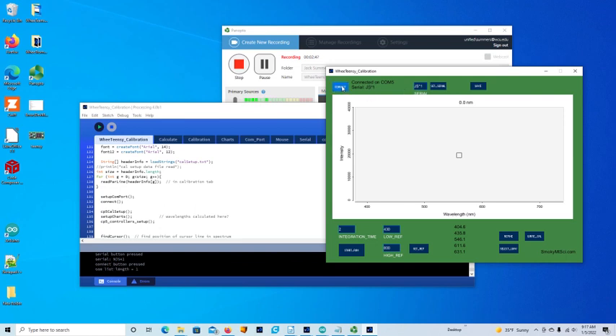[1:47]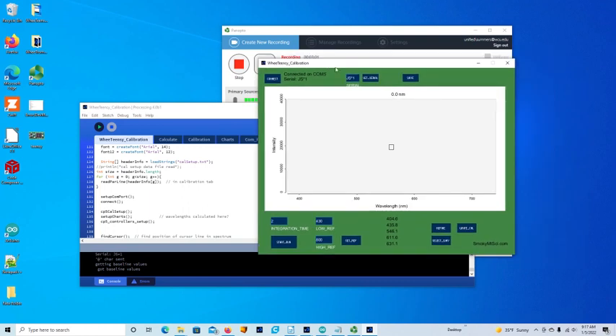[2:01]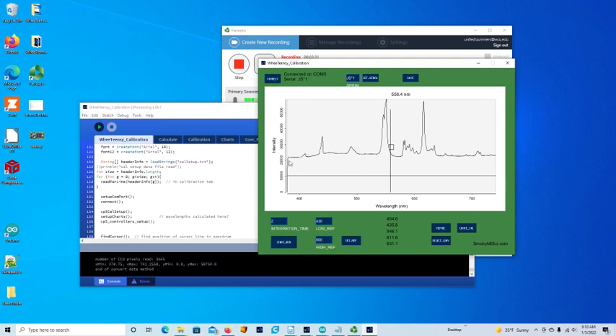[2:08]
Now when we hit the connect button, it should say JS star 1 like we've put in there, right? That doesn't just read, this is written into the non-volatile memory. Okay, so we now have our spectrometer connected. We have a name set to it. Let's run a spectrum. What you see here is we have this very large baseline, and we have this maxed out up here. You can see this peak doesn't have the peak shape that you're expecting.
So first of all, let's deal with this value for the baseline. What we want to do is change this low reference number here. The smaller the number, the closer this will get to the zero point where we want it. So let's just back that down to 400 and see how that affects the spectrum. Once we put a number in here, we have to set it into memory by hitting set reference. Otherwise, it's not going to affect the spectrum.
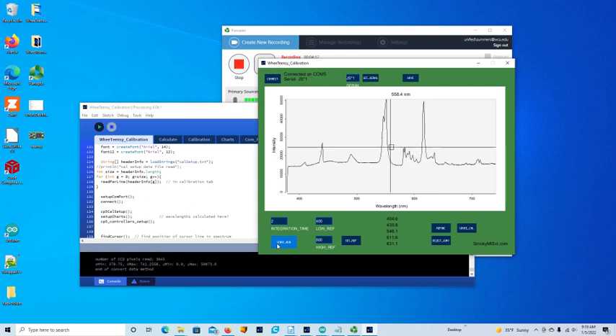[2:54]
Hitting that again, this value is much lower now, but it's not quite what we want. So let's put in another number, let's say 350. We'll hit the set reference, we'll hit the go button, and it accepted that. All right, let's try that again just to make sure that wasn't an anomaly. No, that looks pretty good actually. All right.
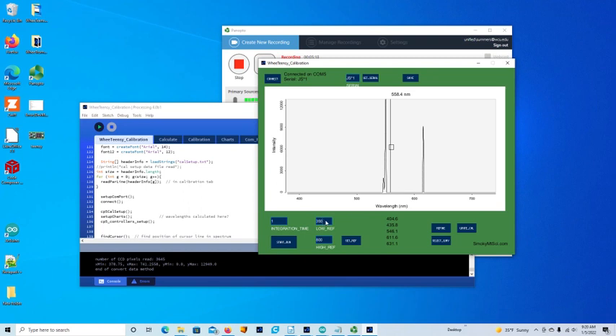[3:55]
Okay, so one thing we know is that this peak is too high. We're getting too much intensity because this is not a good well-defined peak. So let's turn down the amount of time that we are requiring for the spectrum, the integration time. Let's hit that again, see what happens. All right, so now we're down way below the baseline. I should have set the integration time before doing this because now we got something screwed up. So we need to make this a larger number and try that again. So we're going to hit that button again.
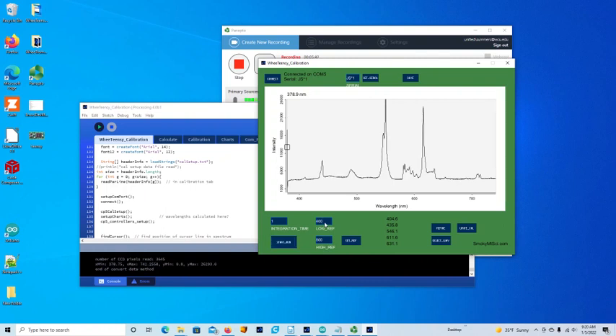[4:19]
That should be on scale, but it's not. Okay, let's bump that up to 400. All right, that is a little high. Pretty soon here. Okay, so that looks pretty good, except for this little piece right there. Let's just make sure that's not an anomaly, which it kind of is. 389 looks like a really nice number there, right? Okay, so that is our low value, our low reference.
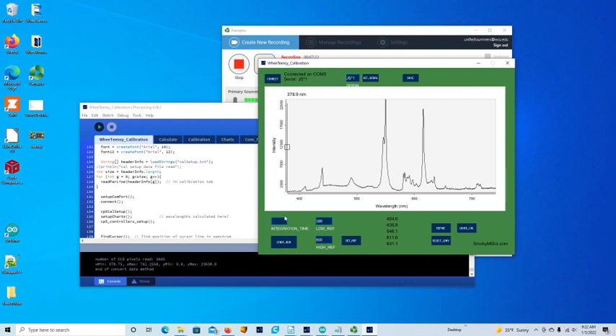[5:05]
Now we have to set the high reference. What we want to do is set the high reference so that when we max this thing out, the maximum intensity should be the full scale of our A to D converter, which is 64,000 counts. So let's put a 2 in there again, hit the start run. And let's see, 1,000, 2,000, 3,000, 4,000, that's less than 5,000 counts, right? So we want to change this high reference number so that when we max it out, it'll be at 65,000.
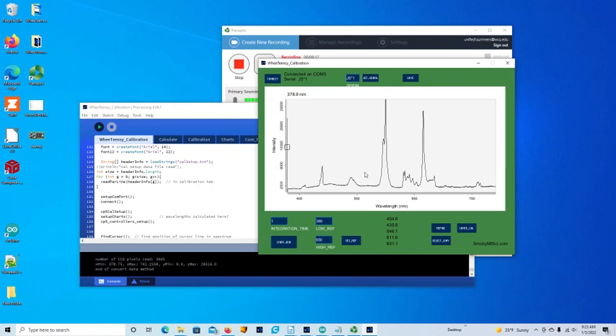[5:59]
So we're going to set that reference, 64,000. Now you can see that this is 64,000, and we got these kind of buggered up looking peaks here, and that's an issue. So let's make this a little bit smaller, and we'll change this back to 1 millisecond of integration time and see what we get. All right, that looks nice.
We have this really sharp peak. We have another sharp peak over here. We are not maxing stuff out. All right, so that's the high and low reference, which adjusts the scale in the Y direction, in the intensity direction. Now let's set the wavelength scale.
So we have this box over here that we can drag across and see where everything is, and this peak should be at 404.6, but it's at 439.9. Don't worry that that box is not centered on where the lines are. We're trying to put this line on the very top. So what we want to do now is click on that button, which is our reference for 404.6 nanometer wavelength, and we want to select it.
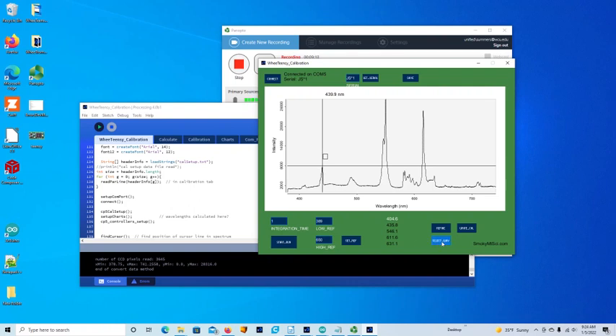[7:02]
So we have this select wavelengths. We got the refine and the write cal buttons down here. So we're going to select that peak as our 404.6, and that's at pixel number 472. Now we're going to drag this over to the high peak right there. It doesn't matter that you get absolutely on the top. It's going to select the highest peak that's within a certain tolerance of that point. So we're going to select that one.
We'll come over to this next. What have I done? I've screwed this up, haven't I? Damn it. Okay, I think that is our 404.6. We're going to select that one again. Now we're going to pick this one.
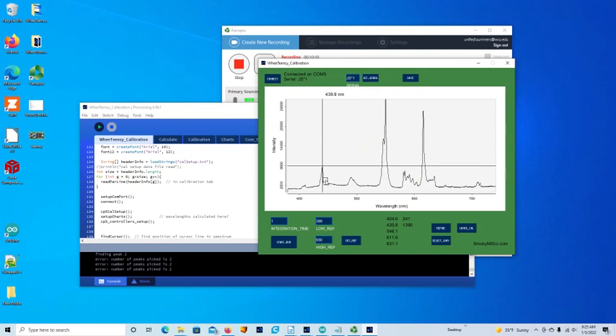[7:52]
This is our 435.8, and this is our 546. This guy over here should be at 611. This guy down here, that little guy there, is 631.
All right, now we have our pixel number associated with each wavelength, and we need to do a least squares refinement to correlate wavelength with pixel number. So we're going to select all of these that we want to use in our refinement, and then we're going to hit the refine button, and it's going to change the wavelength scale here. So let's do that. Boom.
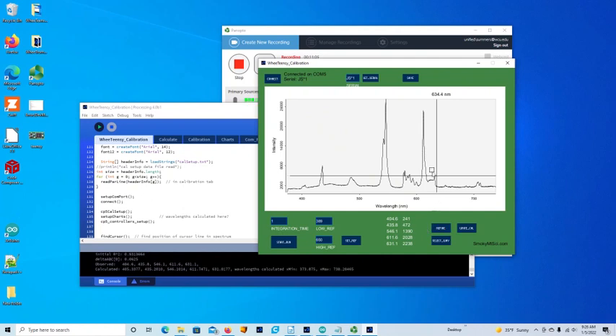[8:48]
All right, now let's take a look at where these things are. That is supposed to be at 631, and we're just a little on one side of that. There's a certain level of precision that I have. Anyway, 630.7, not far off, and you see we're on the low wavelength side of that. This guy should be at 611.6. I had it at 611.7 just a second ago. There it is. This guy should be at 546.1.
This guy should be at 435.8. There it is. You see they're just a little bit off, but not too bad. 404.6. All right, so these things are all looking really good at this point. They're a little off, but not too bad.
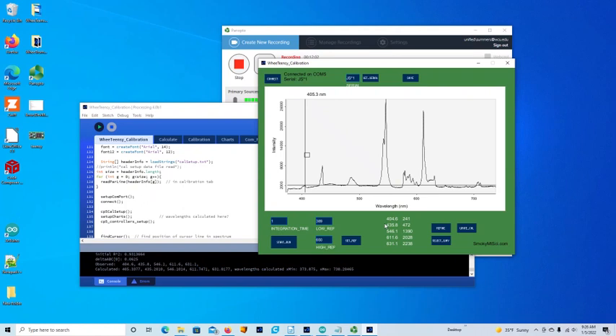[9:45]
So now what we want to do is take the values that were determined from our refinement and write them into the non-volatile memory on the microcontroller. And we do that just by clicking the write cal button. All right, so everything should be in there.
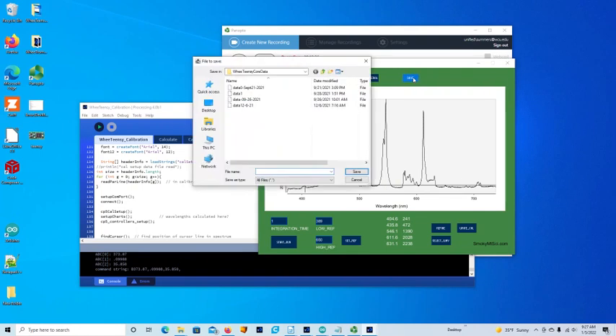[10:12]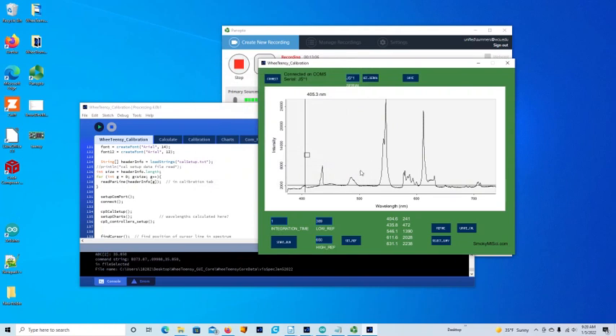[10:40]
The only thing we haven't talked about is this save button, and that's just saving the spectrum here. So if we hit save, we'll get a dialog box asking us where we want to save it to, and we give it a name, and this is visible spectra January 5, 2022. Okay, and we'll just save that there. And then if we want to, we can get in and poke around in the CSV file using any kind of spreadsheet program that we have available to us.
All right, and I'm thinking I should let this go, call it there. That's about all I wanted to say, and the dogs are making me nuts, so we'll have to do something about that. All right, hope that helps.